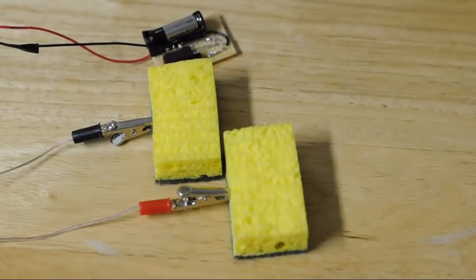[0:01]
Hello, I'm Alvin from Boxit, and I'd like to show you how we made our first prototype of the transcranial direct current stimulation device, or tDCS device. Now, this is a very cheap design to make. It costs around $5 to $10. However, this is indeed a prototype. It does not contain many essential things, such as a fuse to regulate current in case something goes bad.
Now, in later versions, we are planning to do things such as an LED indicator, banana plugs to plug in easier, better sponges, and maybe even a battery indicator. However, ideas are still going on.
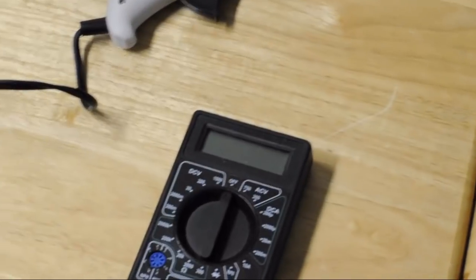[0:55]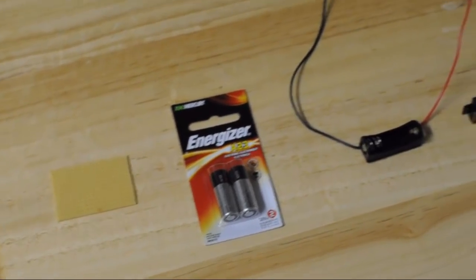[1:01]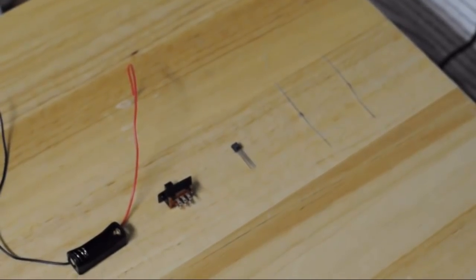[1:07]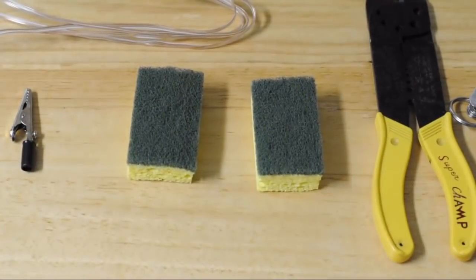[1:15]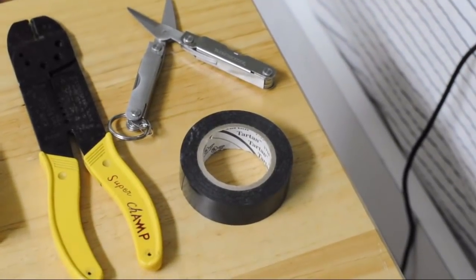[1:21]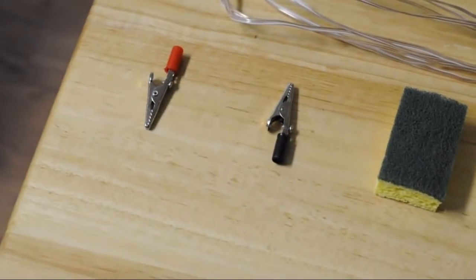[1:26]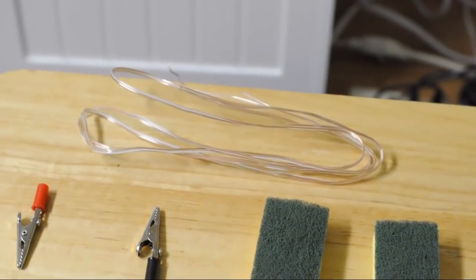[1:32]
A soldering iron, a hot glue gun, a multimeter, a perf board, a 12-volt battery, a 12-volt battery holder, a switch, an LM334Z transistor, a 5600-ohm carbon film resistor, and a 33-ohm carbon film resistor. Some additional materials and tools. These include scissors, electrical tape, wire strippers, two small sponges, two alligator clips, and a fairly long piece of wire so that you can reach your head from a distance.
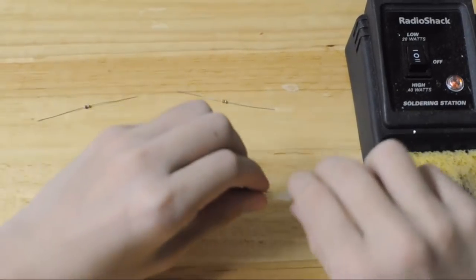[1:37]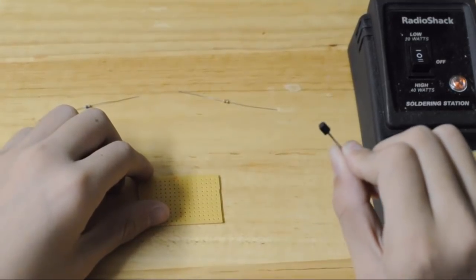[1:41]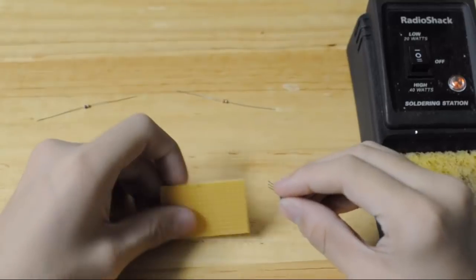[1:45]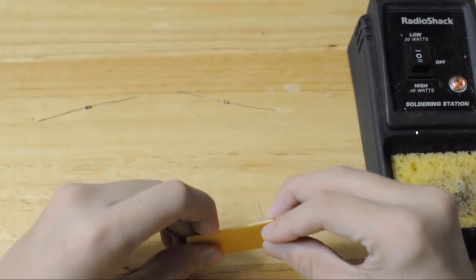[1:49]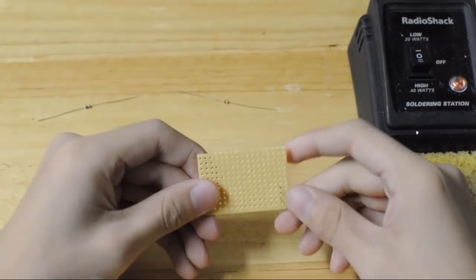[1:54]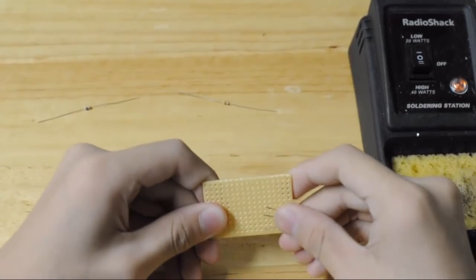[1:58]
The first step is to take your transistor, and you need to take the three legs and insert it into three of the holes of the perf board. Now make sure the flat side is facing the left when you're doing this. Now fold the three pins down so that the transistor stays in place.
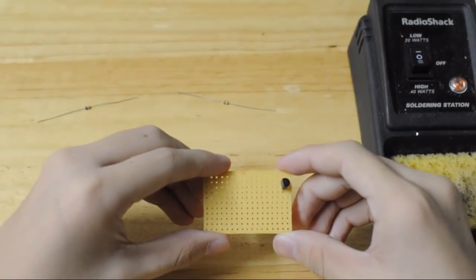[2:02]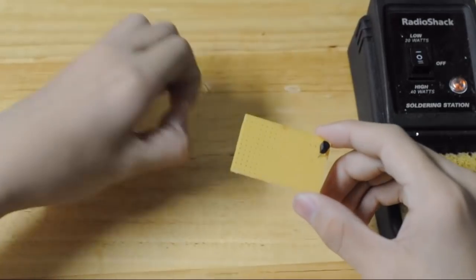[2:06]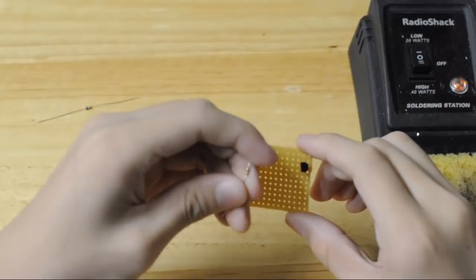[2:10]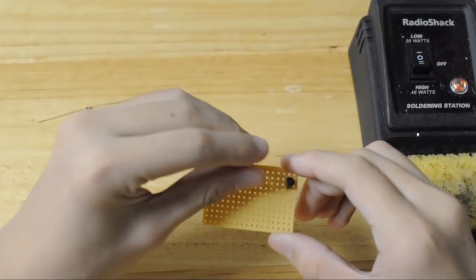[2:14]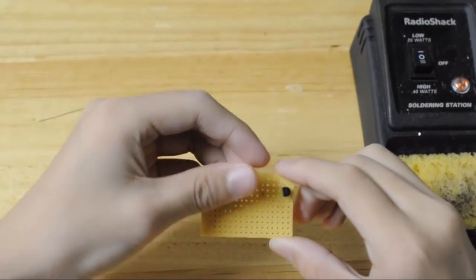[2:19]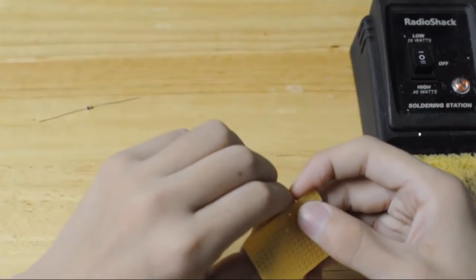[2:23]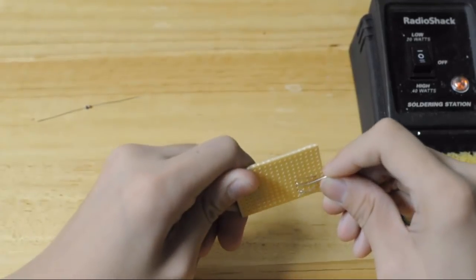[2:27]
Next, what you need to do is take the 33-ohm resistor and put it a couple of holes in front of the transistor. And once you've inserted it, pull the legs so that it stays in place. Now, bend the resistor legs down so that it doesn't wiggle around.
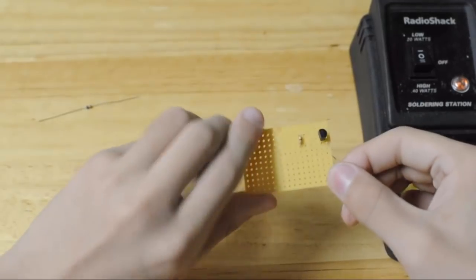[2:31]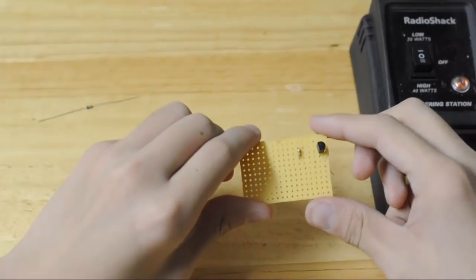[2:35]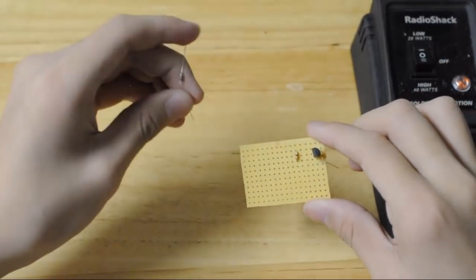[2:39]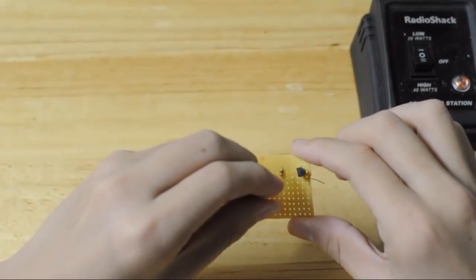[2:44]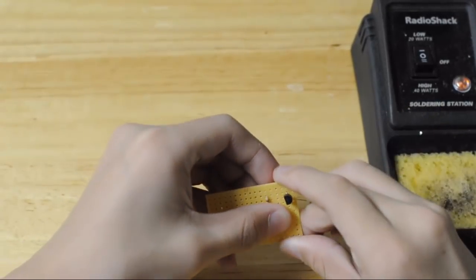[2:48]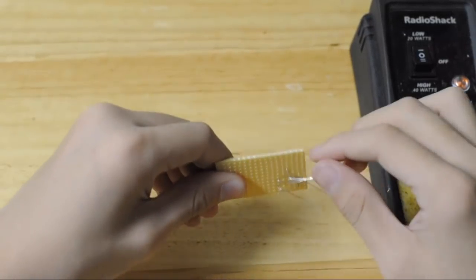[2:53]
Next, take your 5600-ohm resistor and put it in the middle of the 33-ohm resistor and the transistor, only a little bit below. Now, when you insert this in, you need to also fold the legs back so that it stays in place.
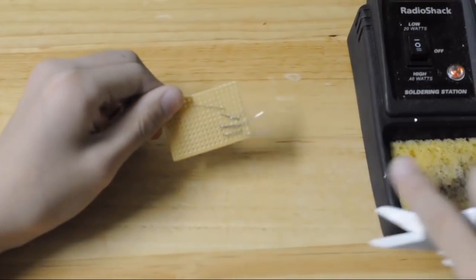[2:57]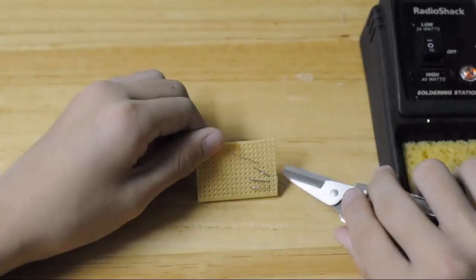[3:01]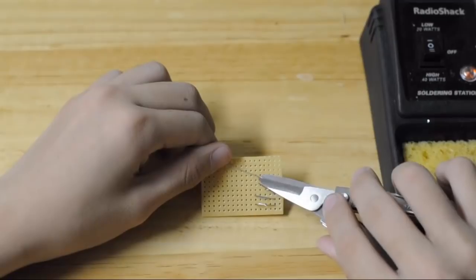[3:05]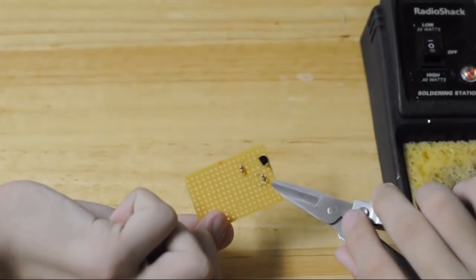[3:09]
We have three resistor legs that are sticking out. Cut them using a pair of scissors. The three resistor legs are now the correct length. As you see, the resistor leg of the 5600-ohm resistor is sticking out and ready to be connected to the switch.
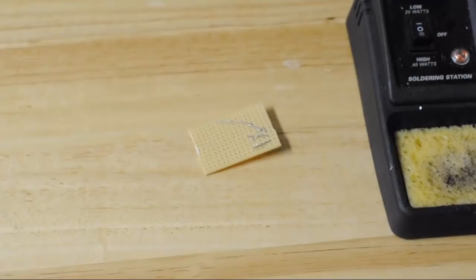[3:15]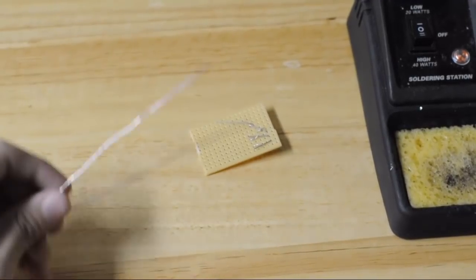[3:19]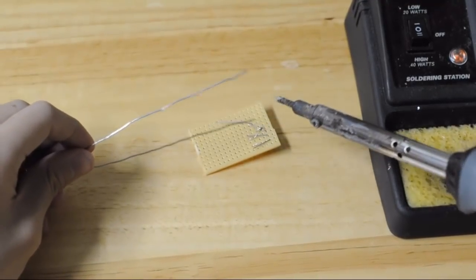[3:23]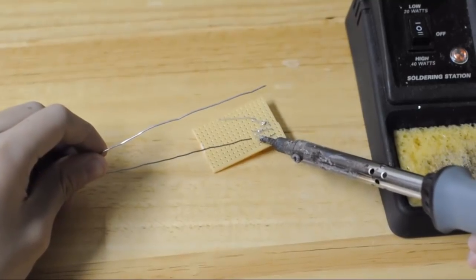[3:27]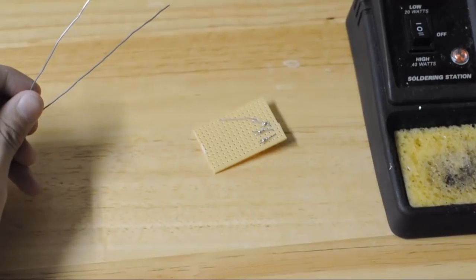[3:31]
Now we need to solder the legs of the resistor to the legs of the transistor. Take your soldering iron and take some solder and begin soldering the legs to each other. Now take note, the longest leg that we haven't cut yet is not going to be soldered at this time. We're going to solder it later to the switch.
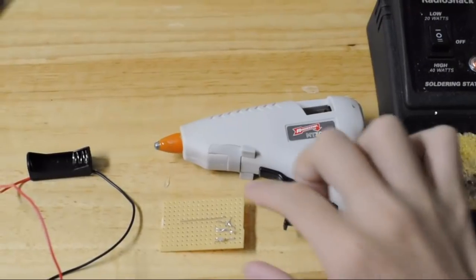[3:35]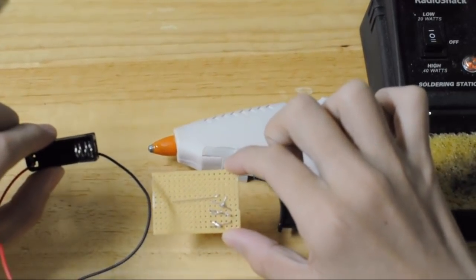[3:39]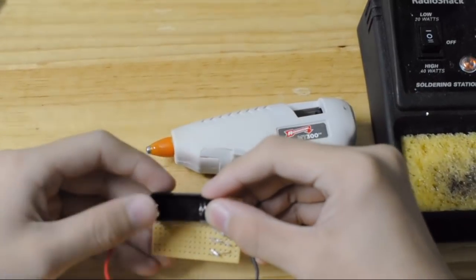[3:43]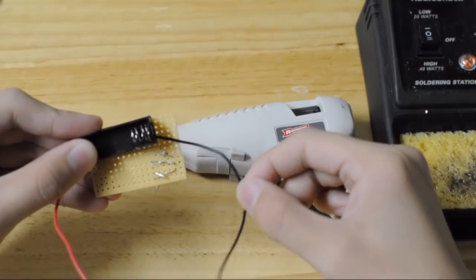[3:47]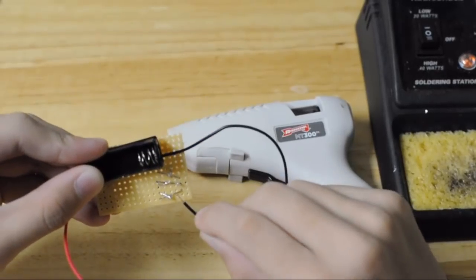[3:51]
Now we need to hot glue the battery holder to the top left of the perf board. Make sure the wire on the right side of the battery holder is the negative wire. We are going to be soldering it to the last leg of the transistor later on.
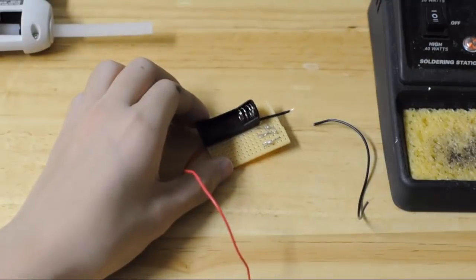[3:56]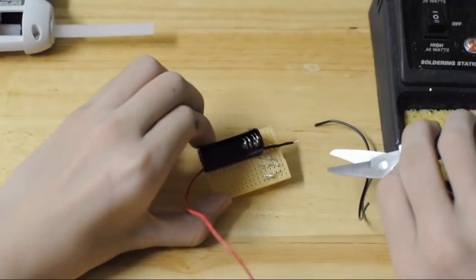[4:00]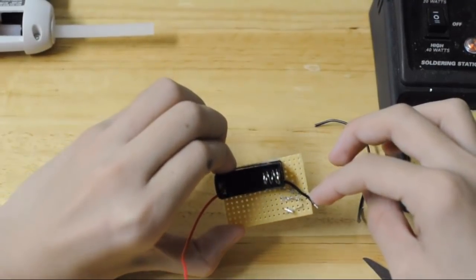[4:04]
After your battery holder is hot glued onto the top left of the perf board, what you're going to need to do is use a pair of scissors and cut the wire so that it reaches the last leg of the transistor without sticking out.
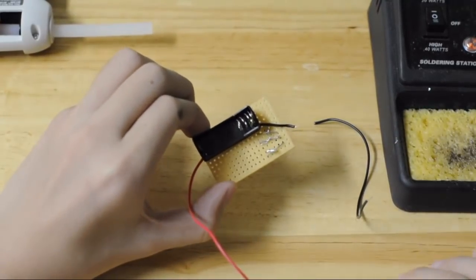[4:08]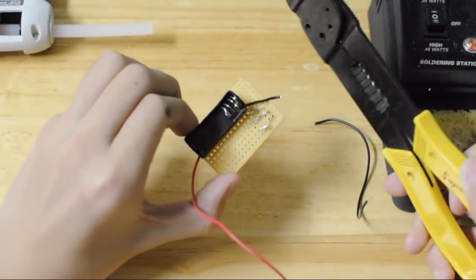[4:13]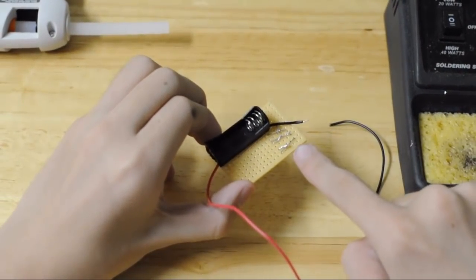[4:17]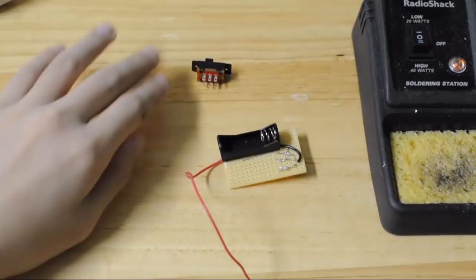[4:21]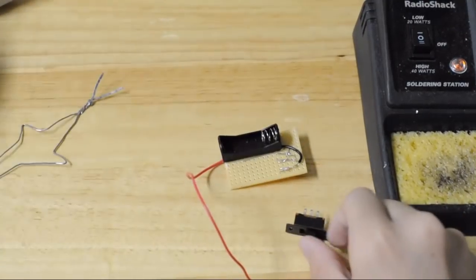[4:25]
After you've cut the wire, use a pair of wire strippers to strip the end of the wire so that you can solder the uninsulated part that you've just stripped to the transistor leg. After you solder the negative wire to the last leg of the transistor, all the transistor wiring should be complete.
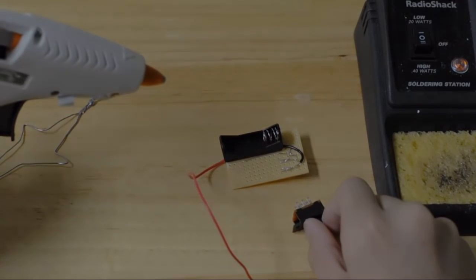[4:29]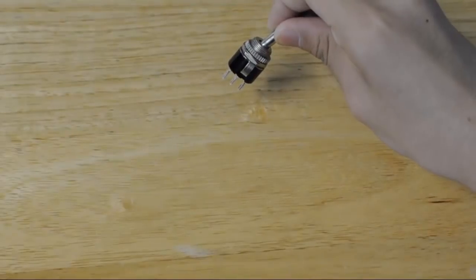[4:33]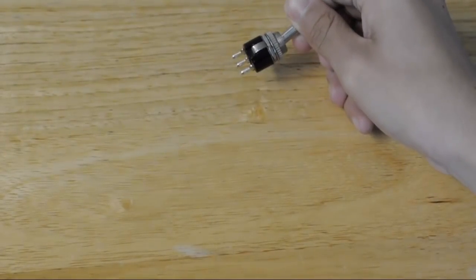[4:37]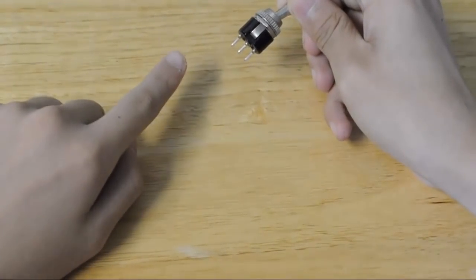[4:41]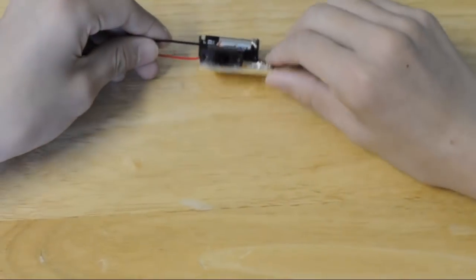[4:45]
Next, take a switch and hot glue it below the battery holder. What you're going to need is a toggle switch so you can turn your electricity on and off. When it's closed, the electricity flows, and when it's open, the electricity doesn't flow. You can have as many pins as you want on the switch, but we only need to use two of them. After you glue the switch on, now it's time to connect the wires.
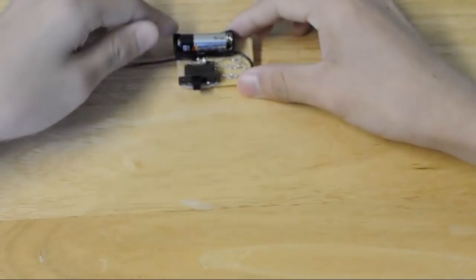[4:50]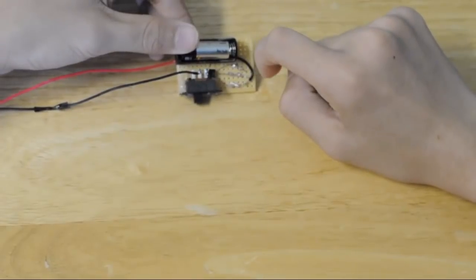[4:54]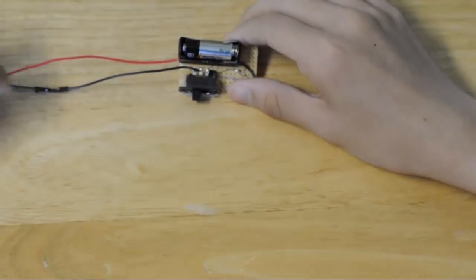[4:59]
Do you remember the 5600-ohm resistor leg? We're going to need to connect that to the switch. Connect the resistor leg to any of the pins that you want. However, the wire that's going to be leaning out must be adjacent to the pin. That means it must be side by side.
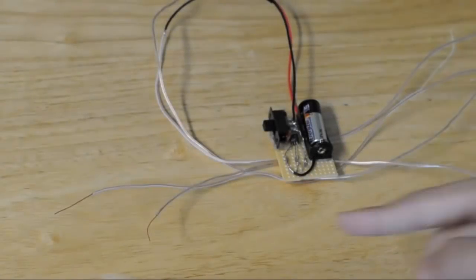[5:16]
Okay, now it's time to connect the device to sponges by using alligator clips. But first, we need to make the wire longer so it can reach our head from somewhere such as your pocket. So what we're going to do is attach a long piece of copper wire to both the positive and the negative wires. Now that you've extended your wires, use wire strippers to strip the ends of these two wires so that they can be connected to alligator clips.
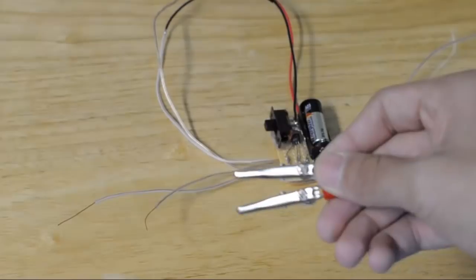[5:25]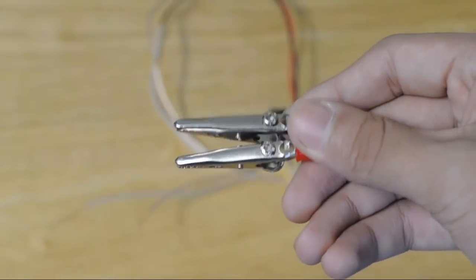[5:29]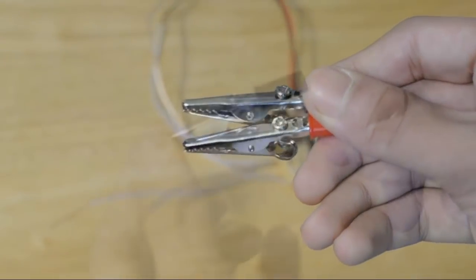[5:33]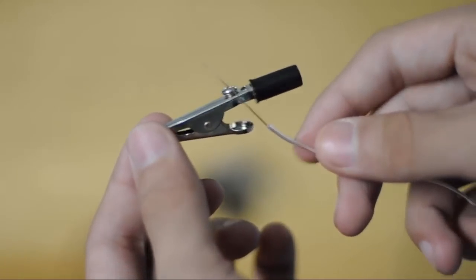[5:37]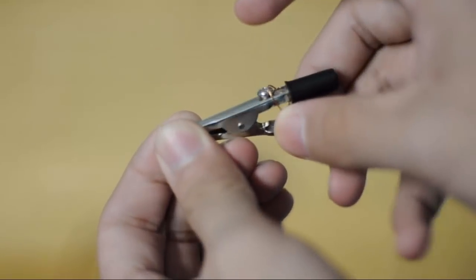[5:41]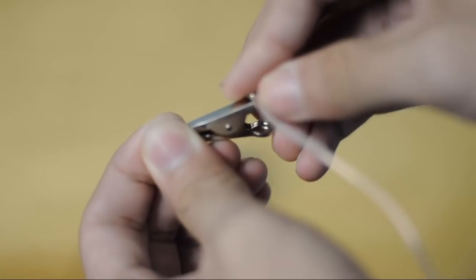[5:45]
Take note, these two alligator clips have metal screws to connect the wires to. However, I'm going to show you a technique to make sure that the wire doesn't fall off, and it could be used on any alligator clip. Now what you want to do is take the uninsulated part of the copper wire and double coil it around the alligator clip. By doing this, the copper and the alligator clip will touch, meaning the electricity will transfer and the wire will not fall off.
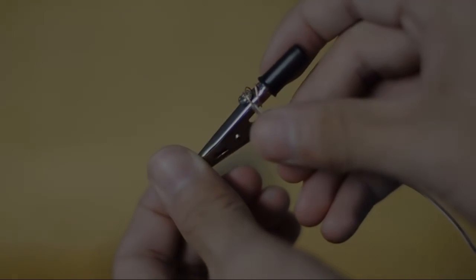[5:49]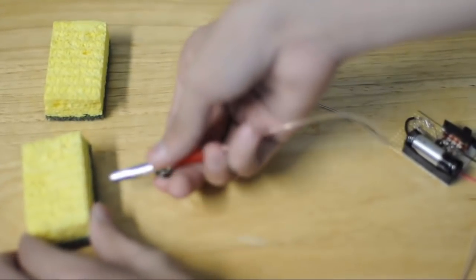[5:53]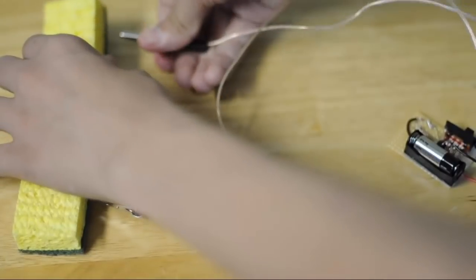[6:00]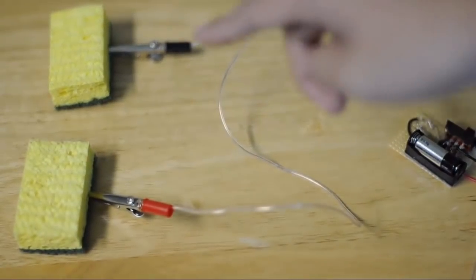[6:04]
Now that you have the wire attached to the alligator clip, all you need to do next is connect it to the sponge. Now make sure you do this very tightly so that the electricity actually transfers. After this, all you need to do is put salt water on the sponges, and we're ready to test.
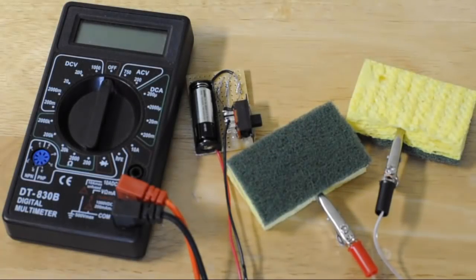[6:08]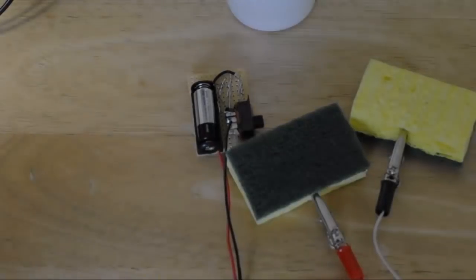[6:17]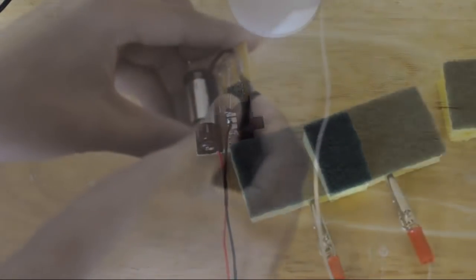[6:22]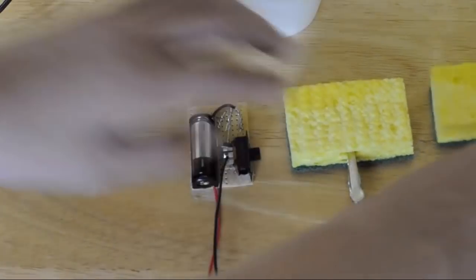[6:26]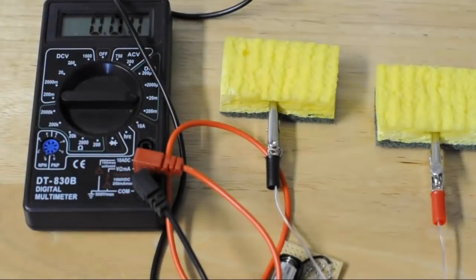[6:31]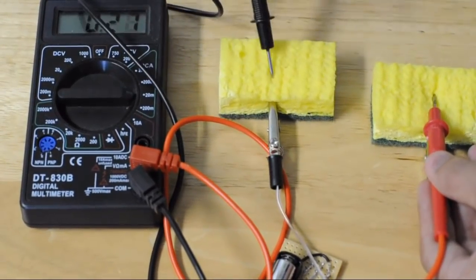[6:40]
Now it's time to measure the amount of electricity the tDCS device gives out so that we don't shock our brain with too much electricity. To accomplish this, we're going to use a multimeter. Take your sponges and dip them into a small amount of salt water. Make sure your device is turned on, and what you need to do now is connect the positive and negative of the multimeter to the positive and negative sponges. When we measured the amount of electricity given off, we set our multimeter to the milliamp setting. Now, if you've built this device correctly, it should give off 1.5 milliamps.
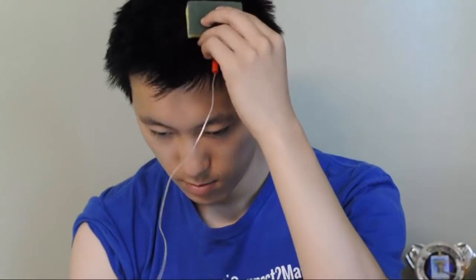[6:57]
Here demonstrating for us is Nathaniel from Boxit, as my hair is too long to do so. So the first step is to place the negative sponge on your right shoulder. The next sponge goes to the dorsolateral prefrontal cortex, which is located on the left side of the head, where he puts it. This is the positive sponge. After you simultaneously place both sponges where I've instructed you to do so, keep them there for around half an hour and you should be done.
Now make sure not to do this for more than an hour because you might see immediate effects such as flashing lights, nausea, or even fatigue.